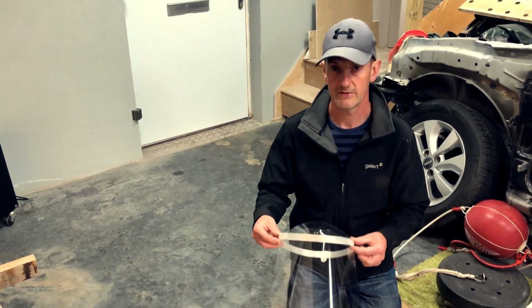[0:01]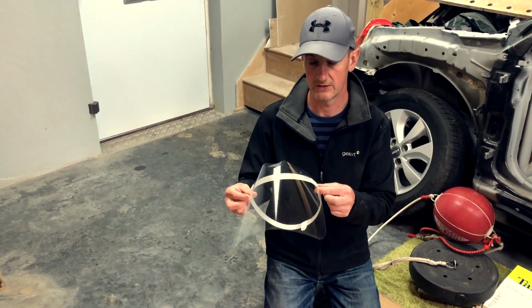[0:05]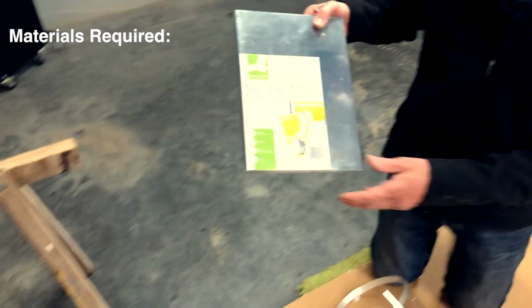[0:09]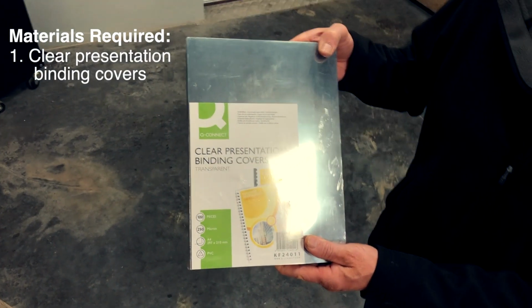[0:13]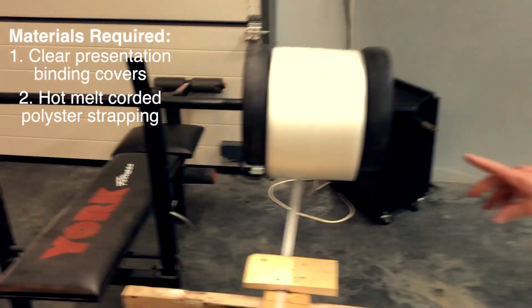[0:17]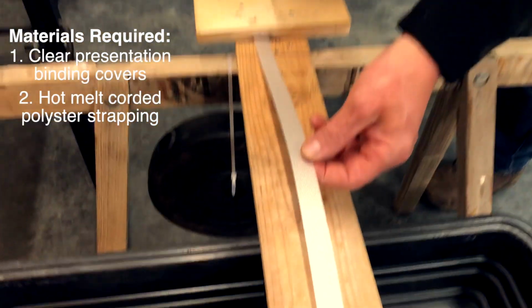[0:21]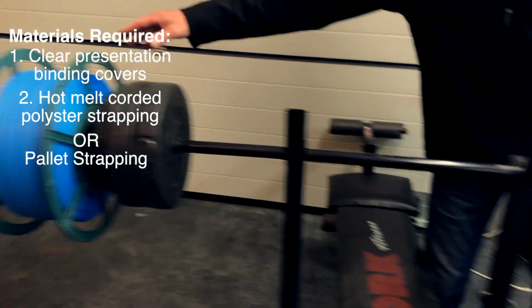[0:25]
Quick video to show you how to make this simple yet effective face shield. The materials required for making it are some of these clear presentation binding covers, some pallet strap, either you can get this material type stuff or you can get this plastic. Both will do the job.
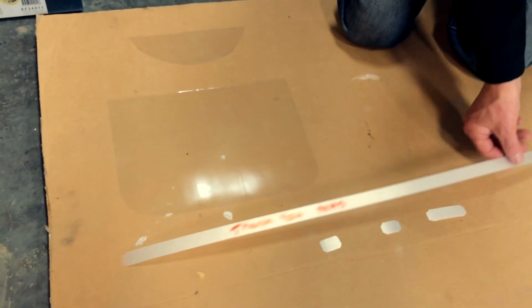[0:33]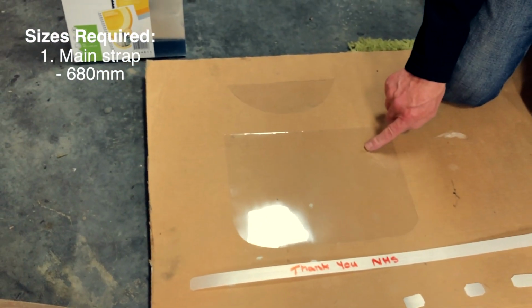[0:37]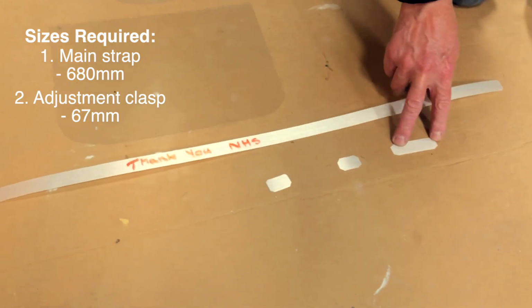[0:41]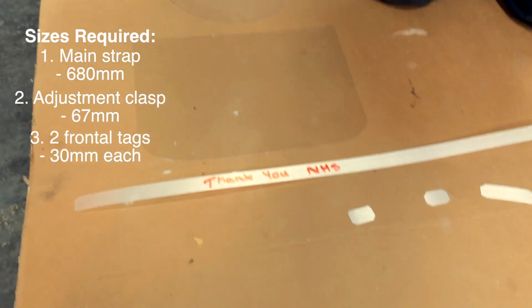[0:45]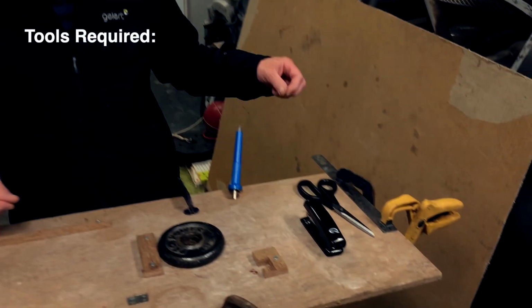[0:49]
Here are our materials cut out to size, ready. So you have the main harness, the main head strap, the face shield, and there's the top cover for the face shield. And this is going to be making the clasp, and these are for just welding tags in the front. You only need basic tools to make this visor, which are a pair of scissors to cut the material,
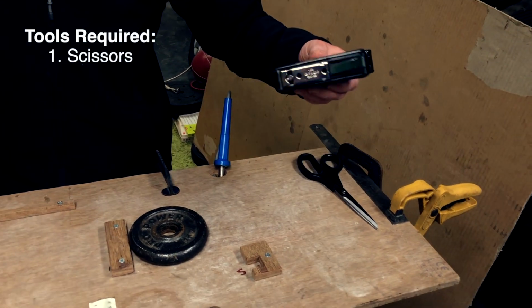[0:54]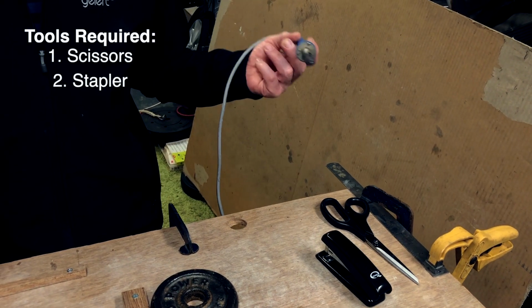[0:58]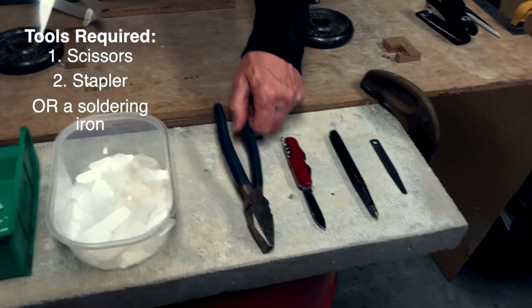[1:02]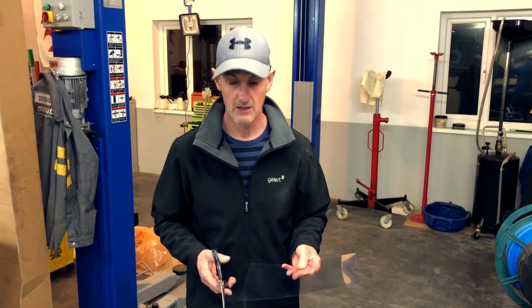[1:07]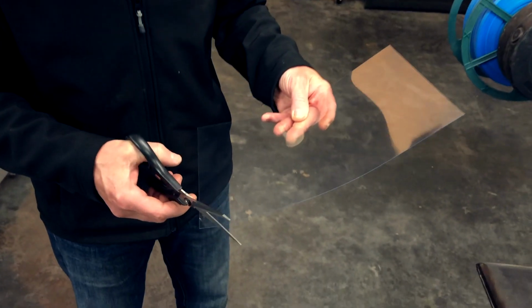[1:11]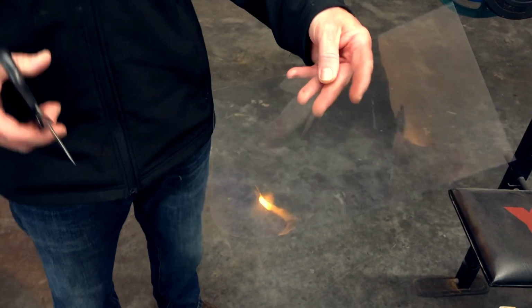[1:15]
a stapler, or my preferred option is a soldering iron. You might need some other basic tools like pliers, a punch, and a few bits and bobs. So the first step is to cut off the sharp edges of the visor, which is as simple as that.
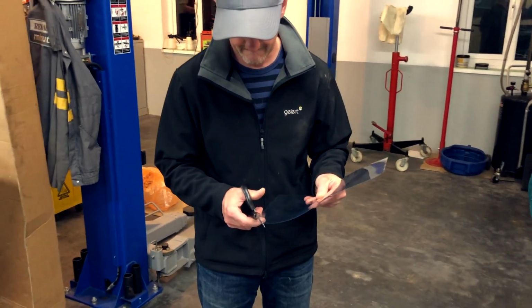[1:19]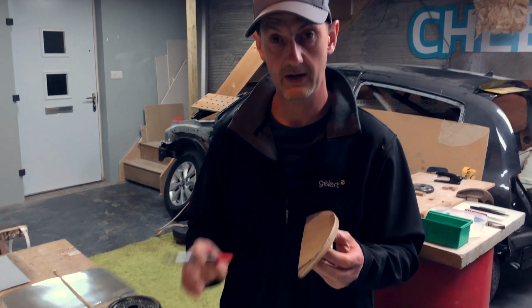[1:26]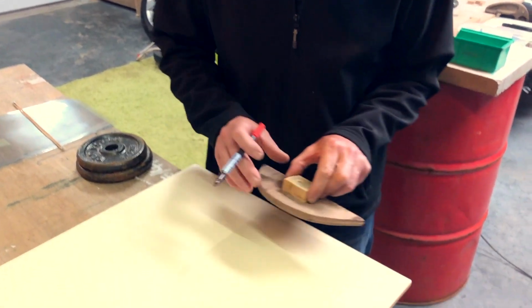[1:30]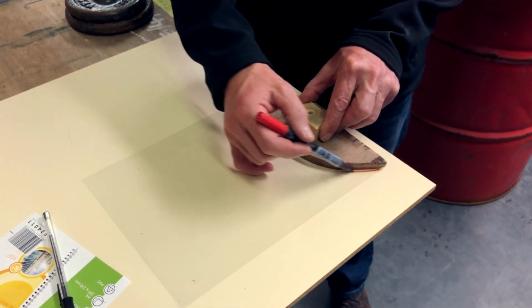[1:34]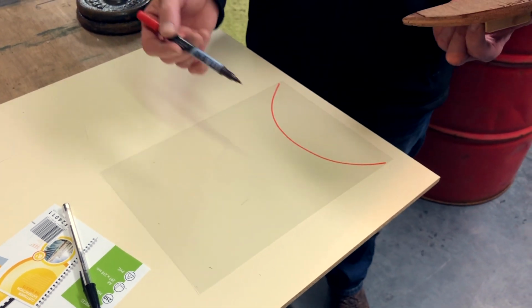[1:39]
So the second step is to cut the top part of the visor out, and I've made this semicircular pattern to make it that much simpler. All you do is just mark it out, and then it's just cut it out with the scissors. You should get 4 pieces out of that on one sheet.
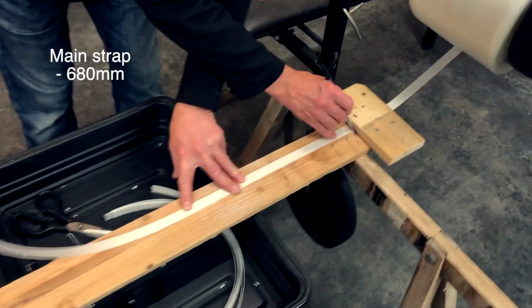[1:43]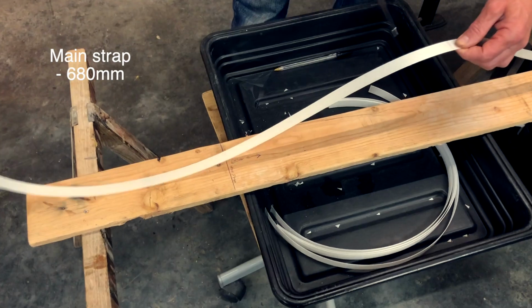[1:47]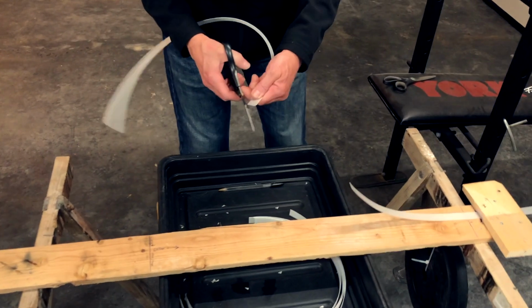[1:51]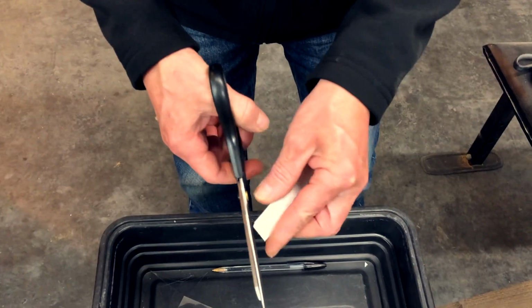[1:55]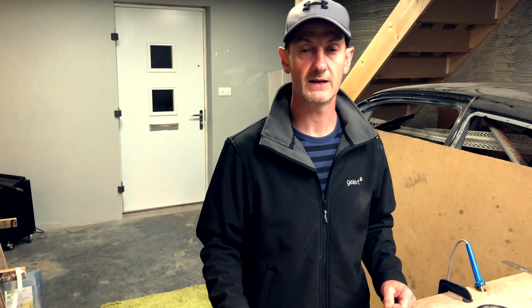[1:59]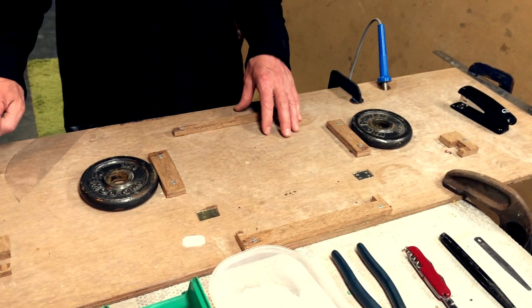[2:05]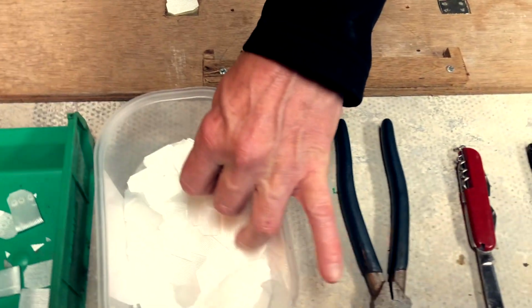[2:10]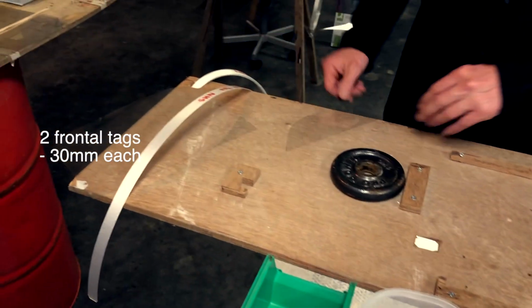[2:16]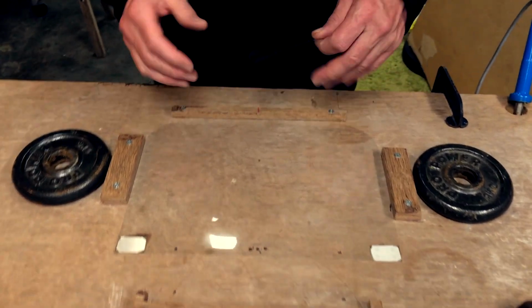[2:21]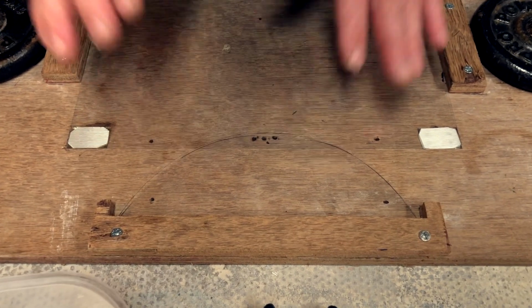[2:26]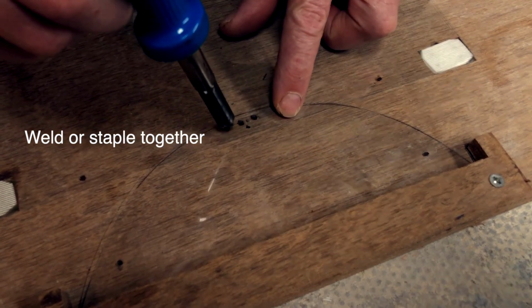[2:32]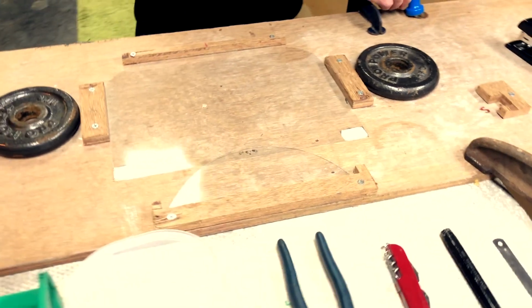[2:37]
So the next step is to assemble the actual face shield. I've made this quick jig to assist, and it makes it easier, but you don't have to have it. So we put 2 pieces in the front because we're going to be welding the plastic together on this type. Then you put the main shield down. This shield then goes like that. We need to weld the center, which is basically just 2-3 quick spot welds, and that is it.
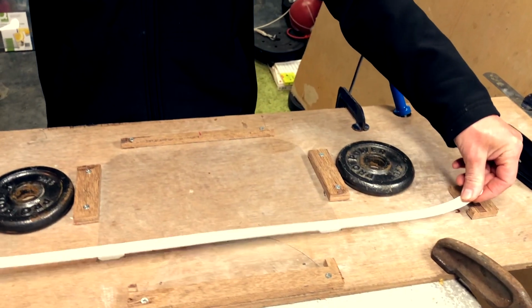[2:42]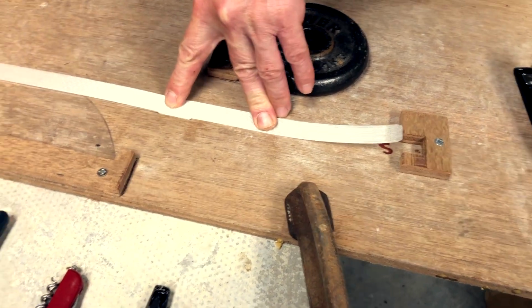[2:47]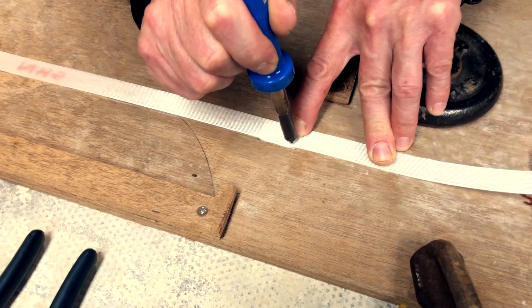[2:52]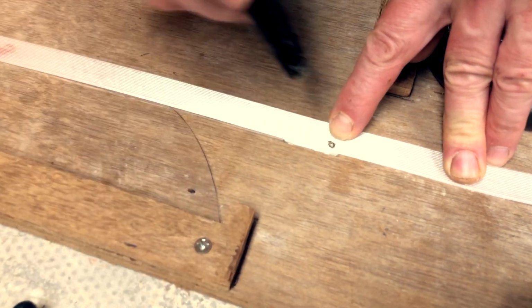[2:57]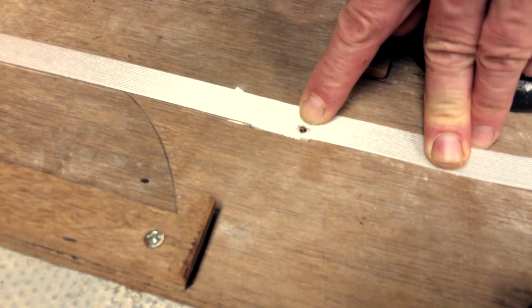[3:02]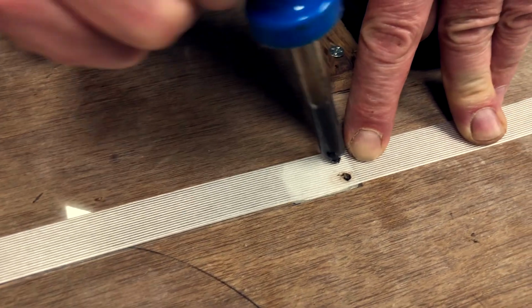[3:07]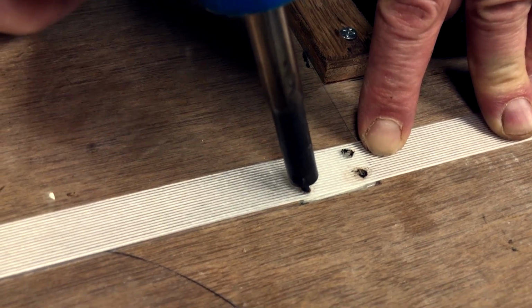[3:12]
Then the main clasps go on, and that's as simple as melting through the plastic, and it does help to squeeze that down. It's not as unpleasant on the head then. Like that.
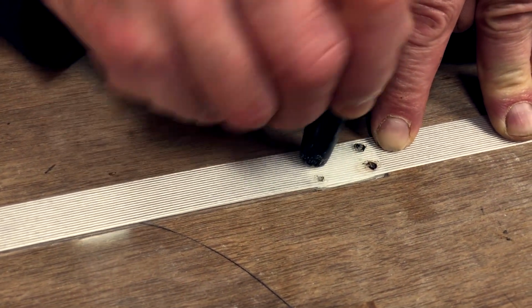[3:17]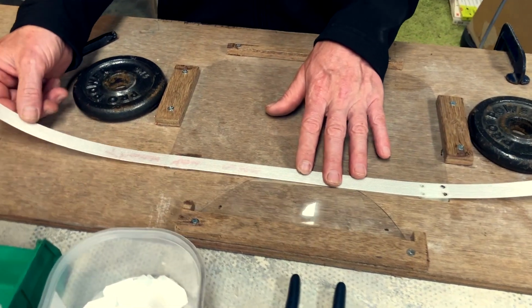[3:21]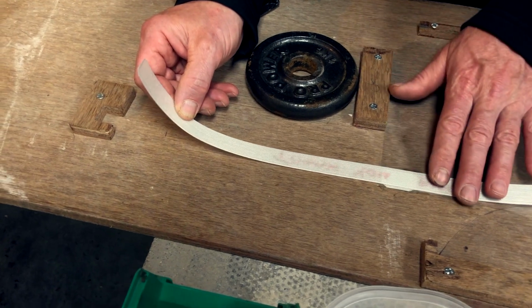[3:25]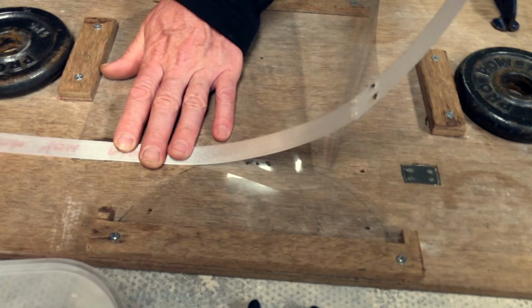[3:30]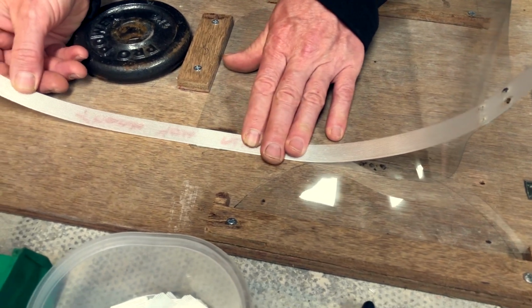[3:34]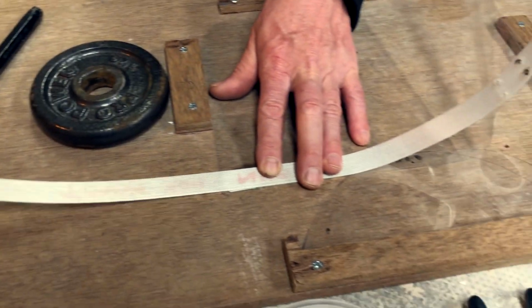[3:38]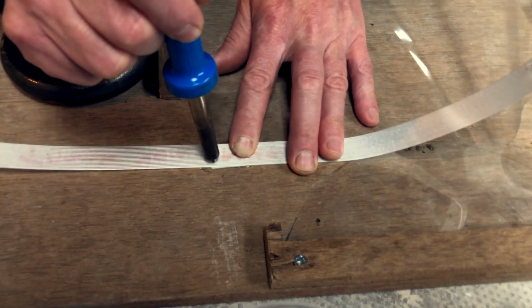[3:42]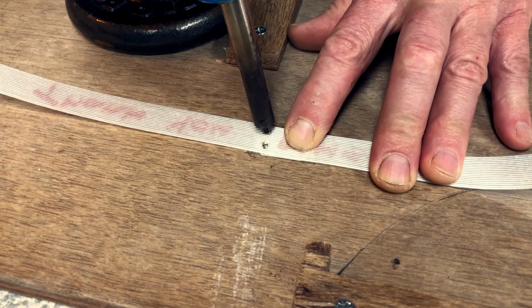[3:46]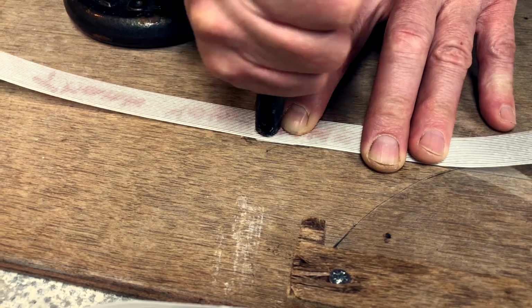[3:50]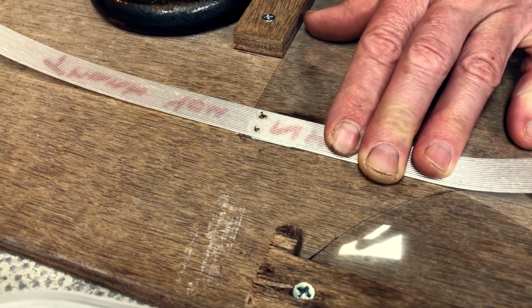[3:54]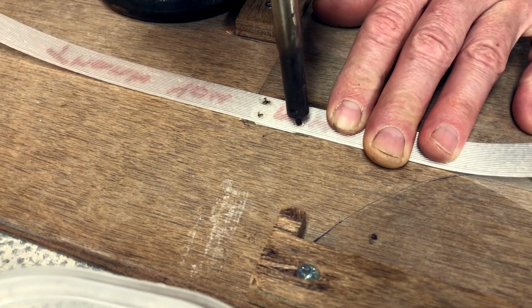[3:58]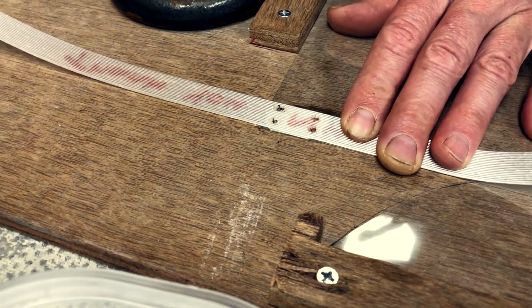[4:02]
We need to move this across to give you the curve of the head. So by lifting it or pulling it that way, you can actually adjust what kind of curve. I've got a setting here which gives me what type of curve, but you can adjust it how you see fit. And again, it's just a case of just melting them together or stapling them. Stapling is much quicker. I just prefer to weld them. Be careful not to burn yourself, because I tell you what, it hurts a lot.
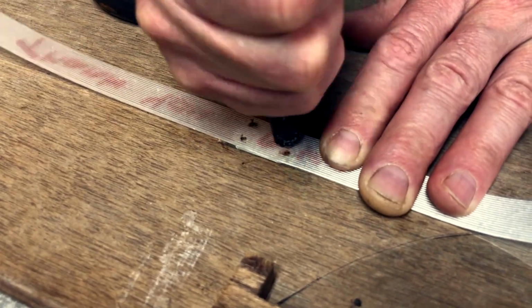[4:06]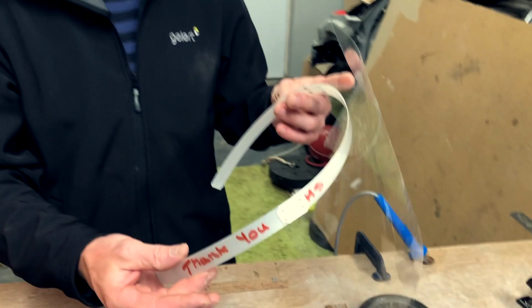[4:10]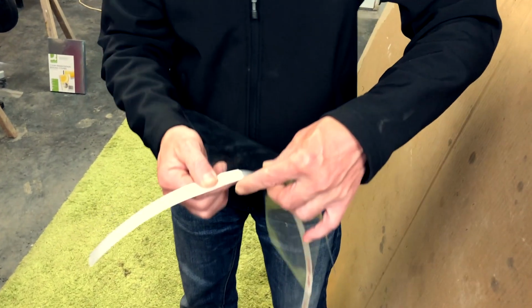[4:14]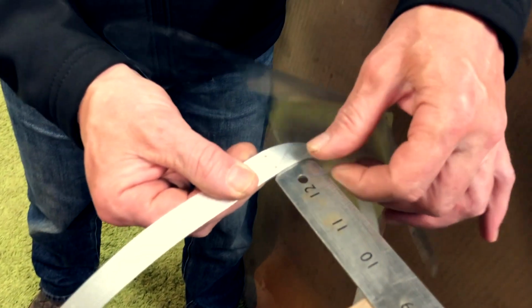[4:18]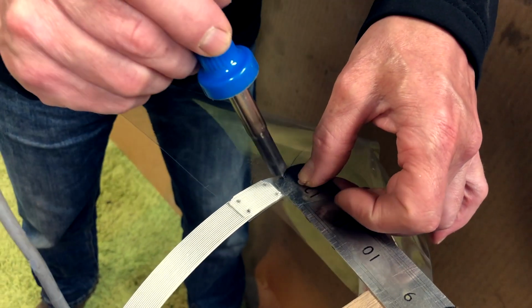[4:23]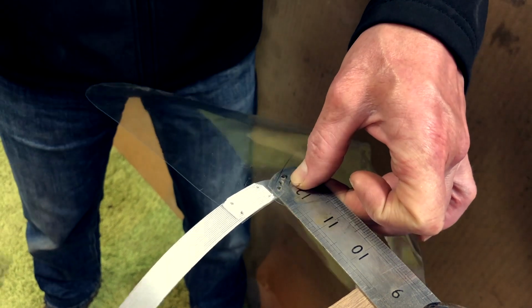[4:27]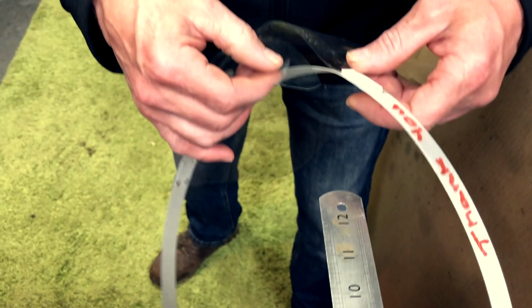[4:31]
And that is the main part of it. So now we need to tuck the inside of the visor in, and again you can either staple it or do as I am doing. Weld them. You need very little time welding these.
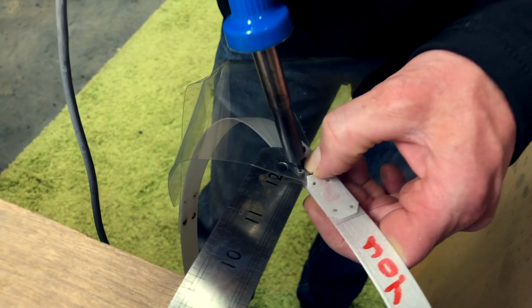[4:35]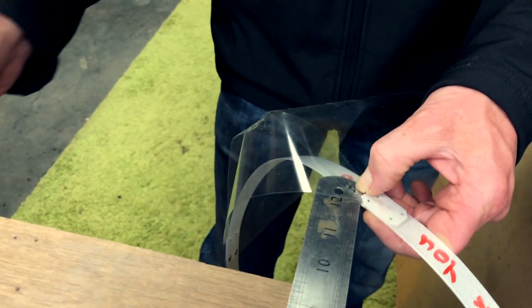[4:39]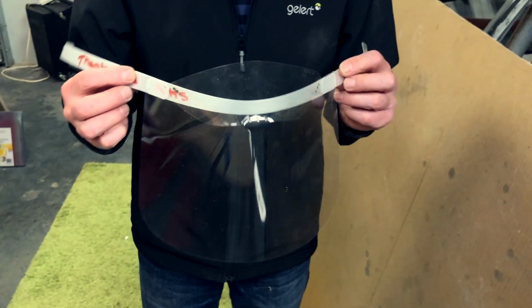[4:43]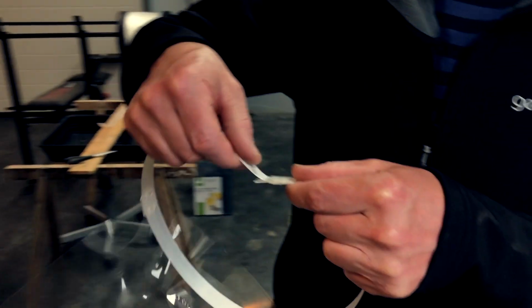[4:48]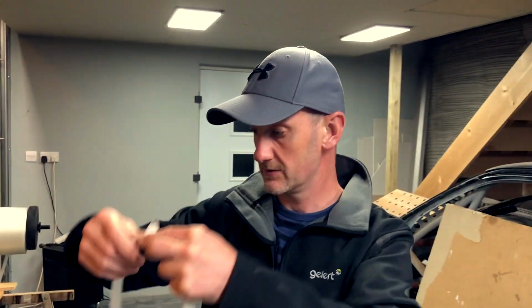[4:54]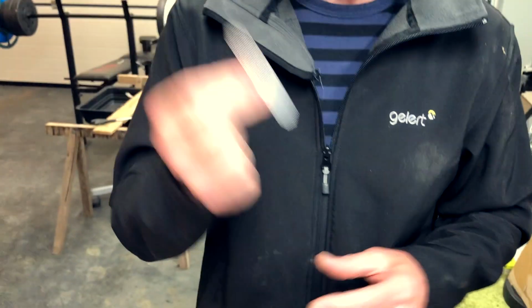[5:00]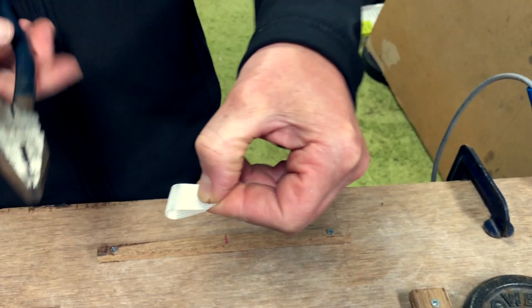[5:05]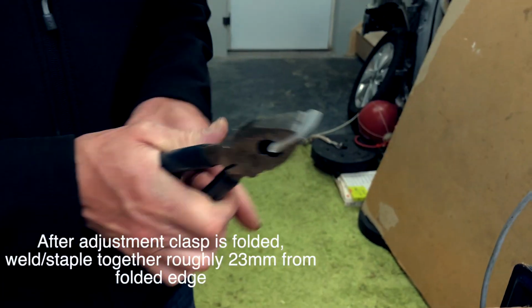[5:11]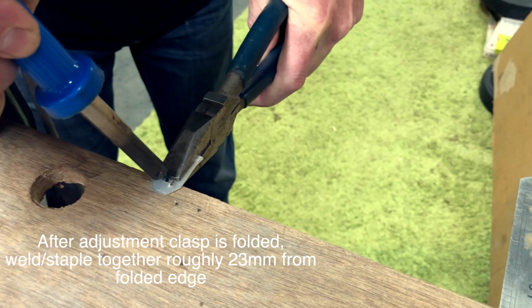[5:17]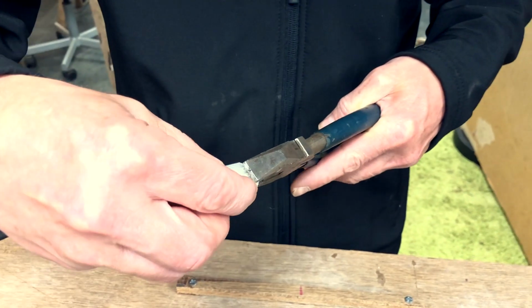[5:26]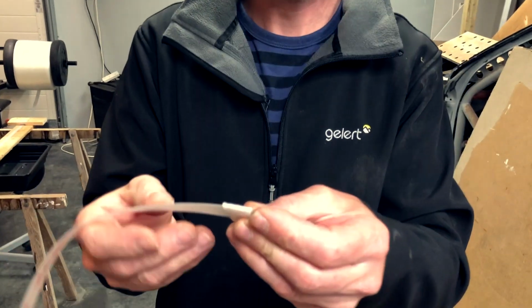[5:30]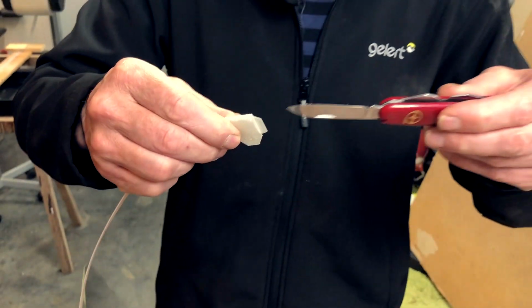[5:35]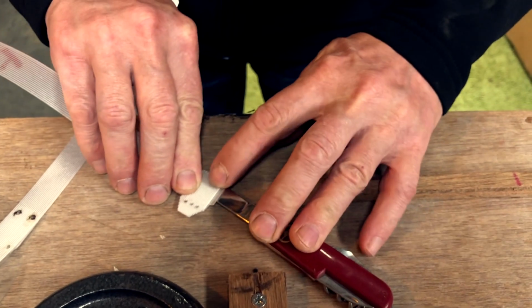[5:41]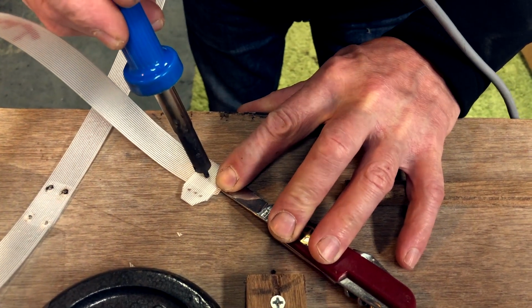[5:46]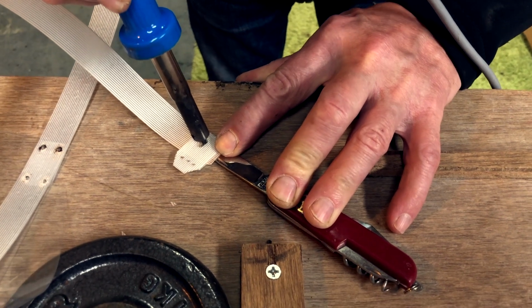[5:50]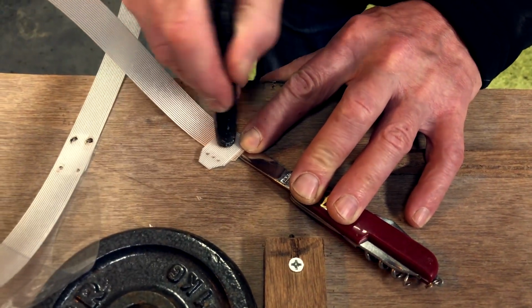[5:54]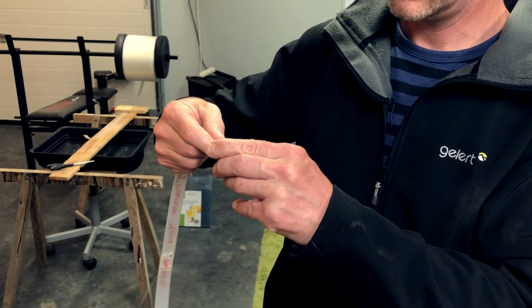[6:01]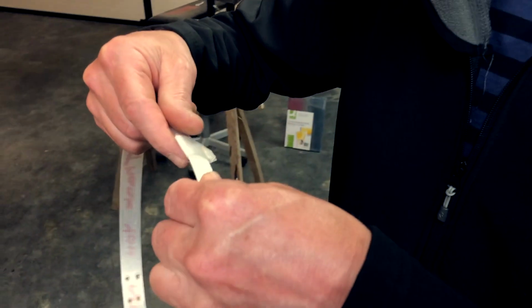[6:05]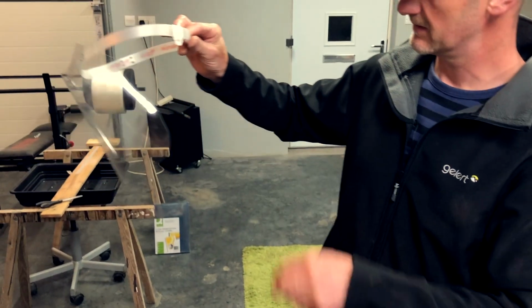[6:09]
Now all we do now is slip the clasp on and stop it falling off. Put a knife on the outside, any kind of knife. And then you can just put one spot weld there. If you don't put the knife there, it's going to go right through and weld everything together. So just put the knife in. And then that one should slide in there. And that is your clasp. And that is your adjustment. And it's done.